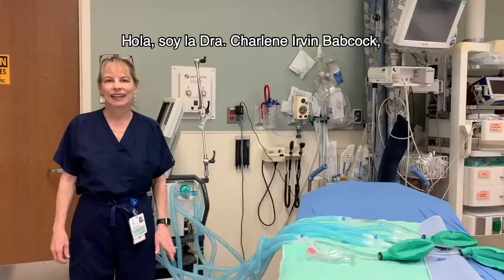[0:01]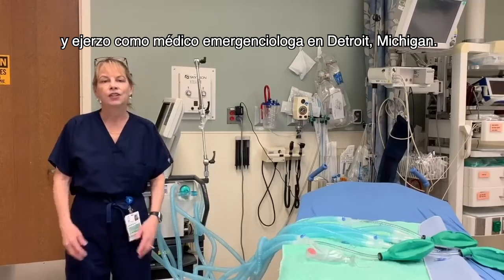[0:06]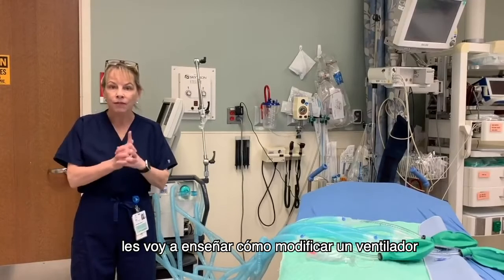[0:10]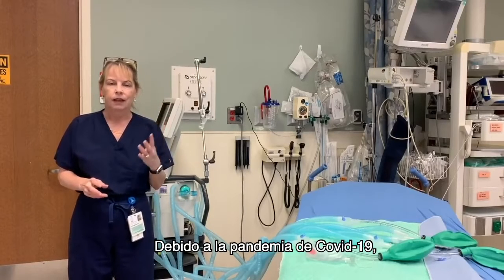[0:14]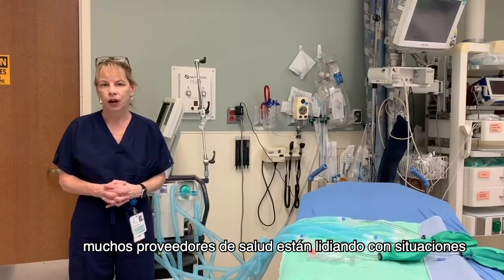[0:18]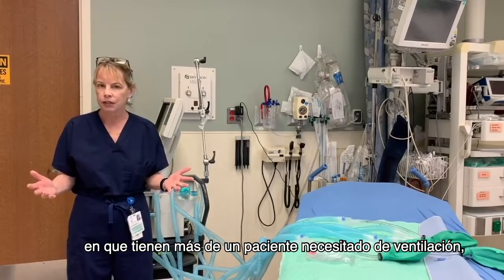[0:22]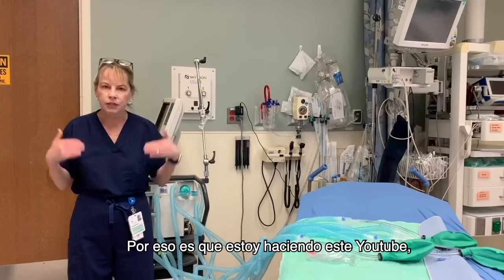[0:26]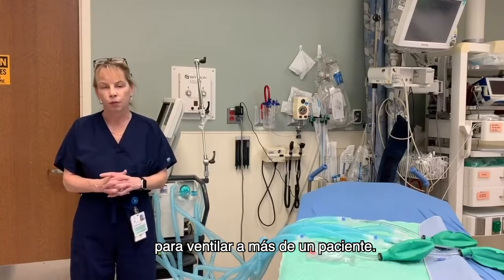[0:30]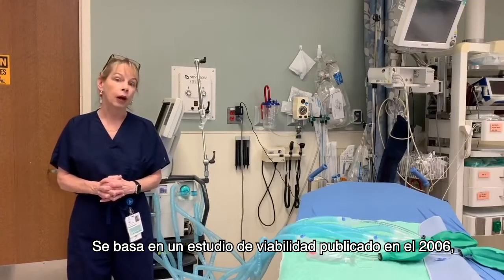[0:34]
And on this YouTube, I'd like to show you how to modify one ventilator to ventilate 2 or 4 patients simultaneously. Because of the COVID-19 pandemic, many healthcare providers are struggling with a situation where they may have more than one patient needing ventilation and not enough ventilators to go around. So that's why I'm putting this YouTube together, so I can show you how to modify one ventilator to ventilate more than one patient.
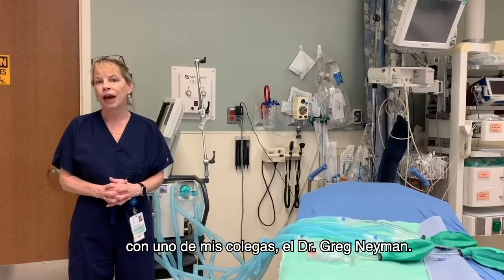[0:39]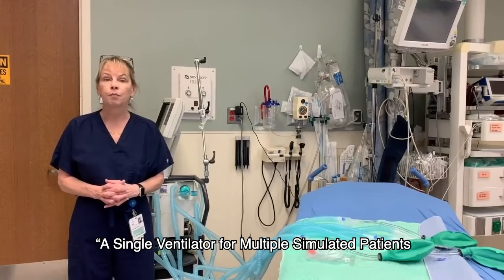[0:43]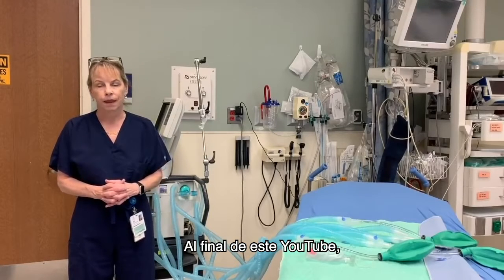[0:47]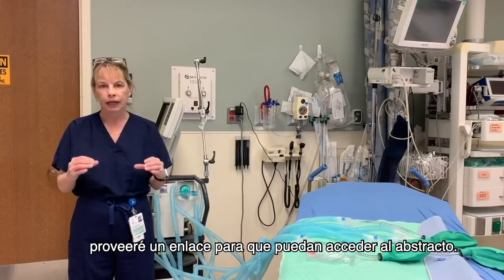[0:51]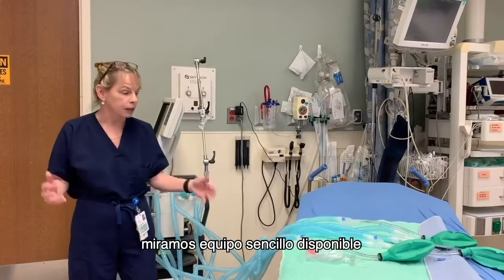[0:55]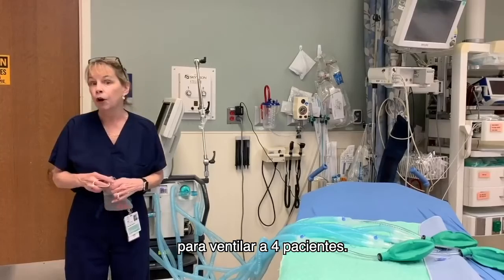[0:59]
It's based on a feasibility study that was published in 2006 in Academic Emergency Medicine with one of my colleagues, Dr. Greg Neyman. The name of that manuscript is A Single Ventilator for Multiple Simulated Patients to Meet Disaster Surge. And at the end of this YouTube, I'll provide a link so you can click on it and go to the abstract. In that study, we just looked at simple equipment available in the emergency department and a way to modify the ventilator to ventilate 4 patients.
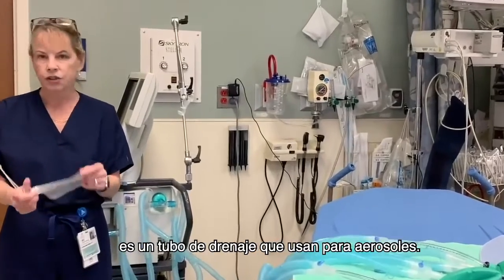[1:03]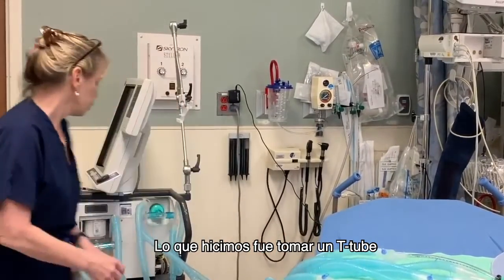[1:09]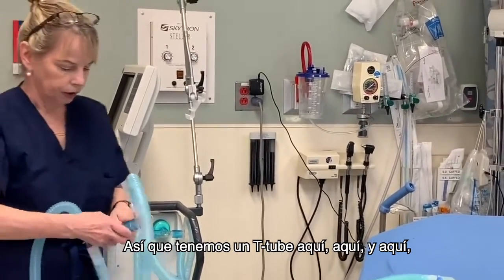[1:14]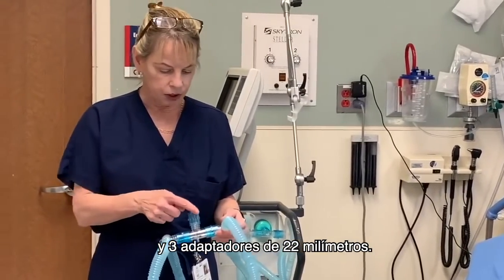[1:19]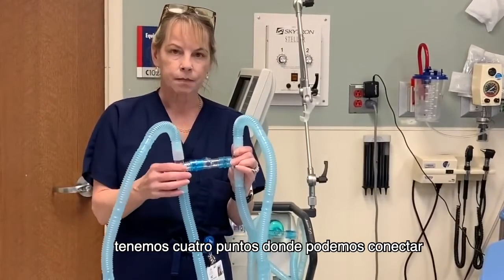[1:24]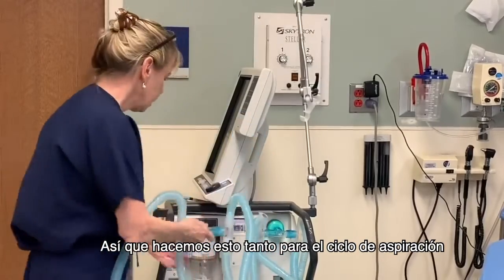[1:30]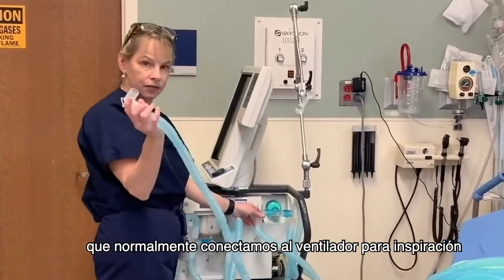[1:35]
And we used a T-tube, this is from a respiratory therapist cart. It's a drainage tube they use for aerosols. And we cut the bag off so we have a T-tube. And what we did is we took one T-tube and 4 different adapters. These are 22 millimeter adapters. So here you have a T-tube here, here, and here, and 3 22 millimeter adapters. And in this configuration, we have 4 ports that we can connect the expiration to or the inspiration cycle to. So we did this on both the expiration cycle and the inspiration cycle and connected the tube that we normally connect to the ventilator for inspiration directly to these tubes.
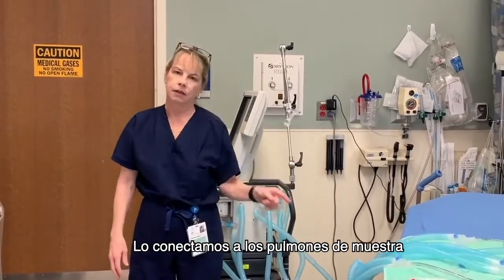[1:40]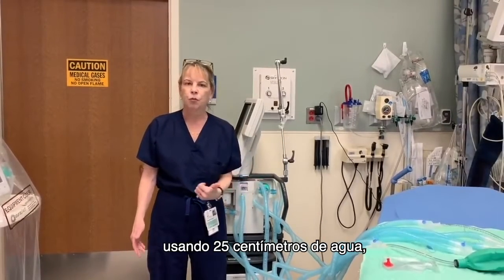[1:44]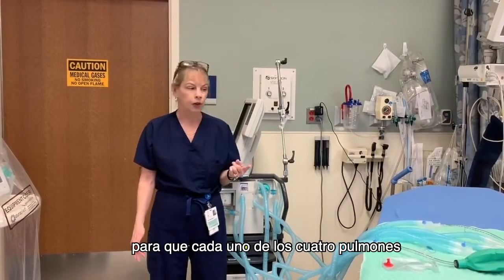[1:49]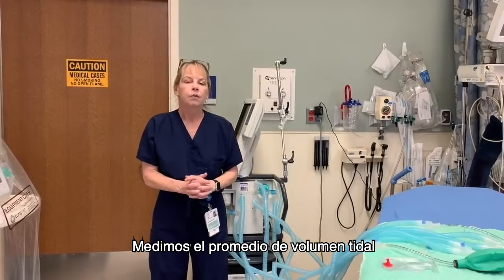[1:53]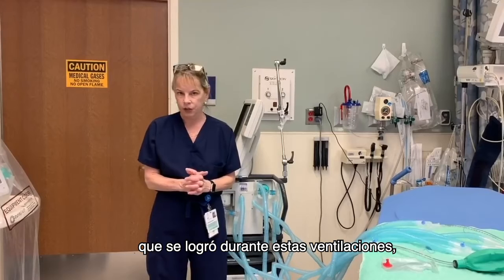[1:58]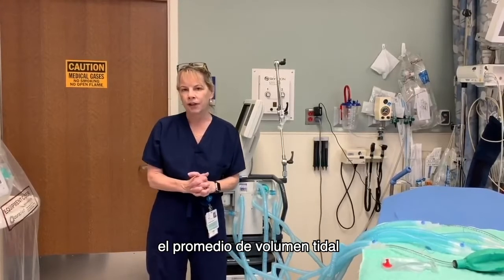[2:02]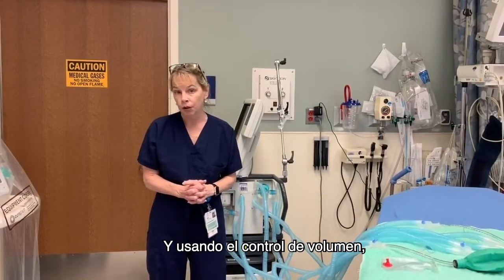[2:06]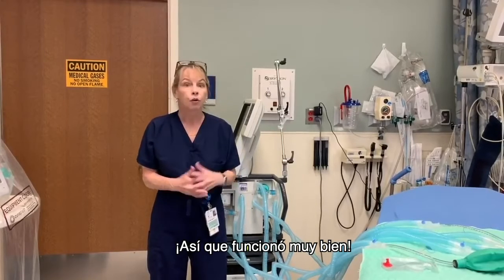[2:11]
We hooked them up to test lungs and we watched them for 6 hours. 6 hours both on pressure control using 25 centimeters of water and volume control using 2 liters tidal volume, so that each test lung, 4 test lungs, each one would get about 500 mLs. We measured the average tidal volume that was achieved during these ventilations, and using pressure control at 25 centimeters of water, the average tidal volume was approximately 471 cc's, and using volume control, the average tidal volume per test lung was approximately 510 mLs. So it worked very well.
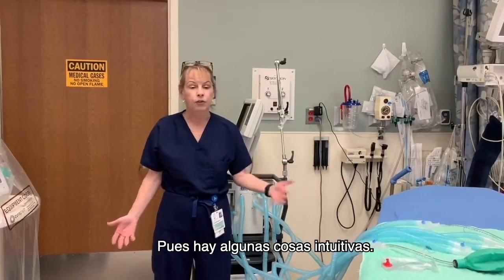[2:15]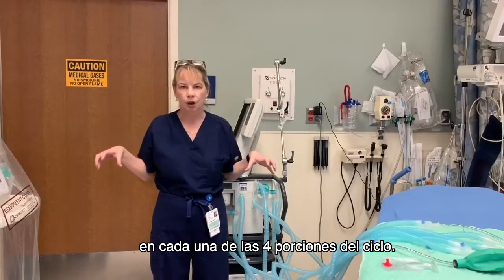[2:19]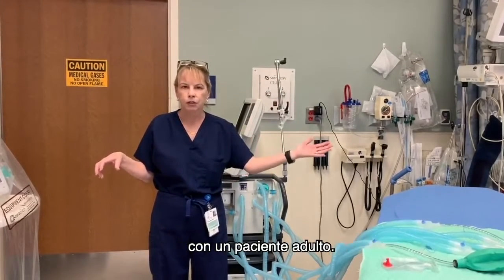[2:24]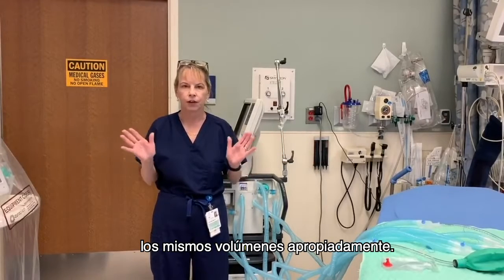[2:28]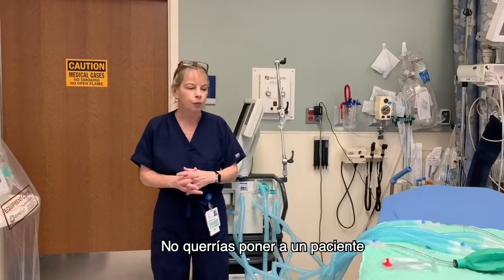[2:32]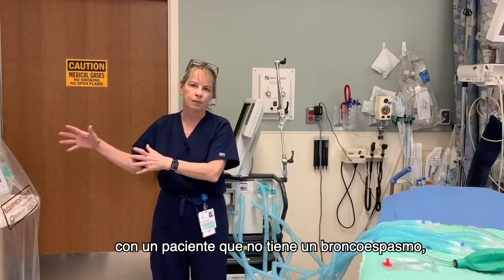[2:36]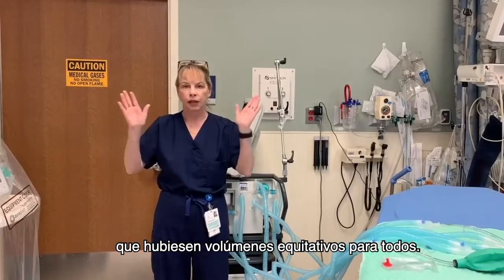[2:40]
But how do you use this information, because it's only been done on a test lung? Well, there's a few things that are somewhat intuitive. First of all, you want to make sure the lung sizes are the same in all 4 portions of the circuit. You wouldn't want to put a pediatric patient with an adult patient, because that wouldn't make sense. It wouldn't be able to ensure that the same volume is delivered everywhere appropriately. Likewise, you want to make sure the resistance is the same. You wouldn't want to put a patient with severe bronchospasm with a patient who did not have bronchospasm, because that might change the amount of volumes and it wouldn't make sure that they were equal volumes delivered to everybody.
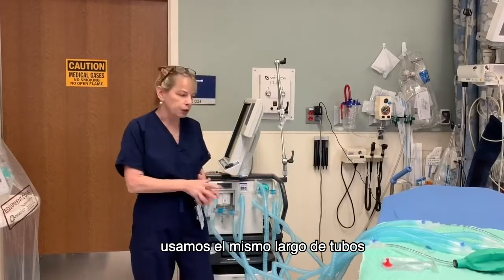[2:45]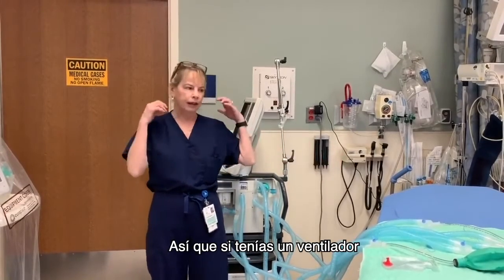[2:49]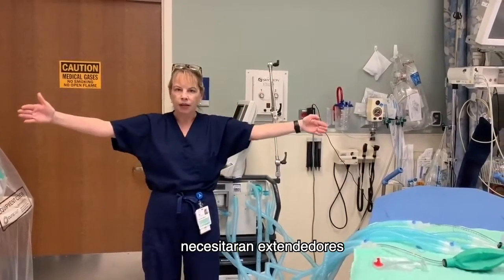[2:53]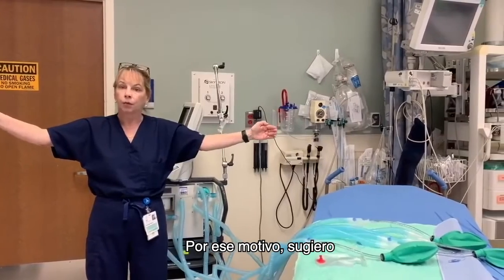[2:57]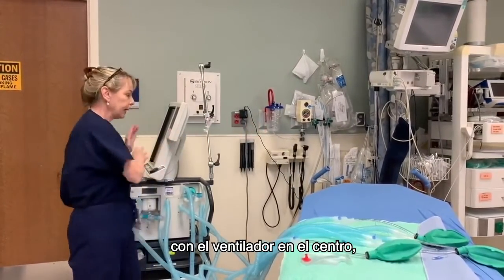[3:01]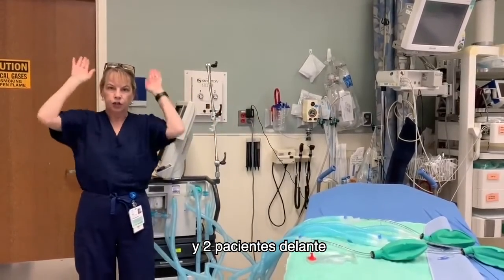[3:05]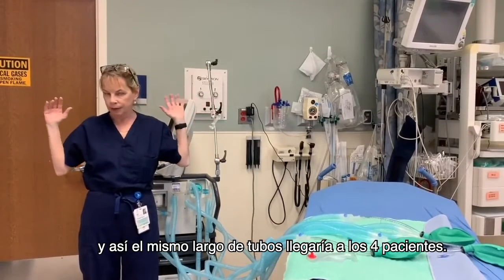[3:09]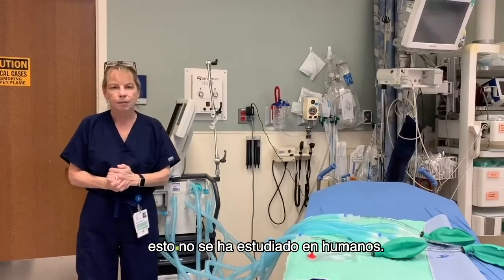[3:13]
Additionally, in the study, we use the same length tubing for all 4 test lungs. So if you had one ventilator with 4 patients in a row such as that, the patients on the outside might need extenders to have the tubes reach the ventilator. For that reason, I would suggest what I call a half-star configuration. So the ventilator in the middle, 2 patients on either side with the heads facing the ventilator, and 2 patients in front with the heads facing the ventilator. And that way, the same length tubing would be able to reach all 4 patients. Now, having said this, again, this has not been studied in humans.
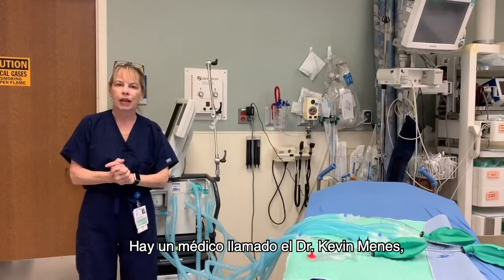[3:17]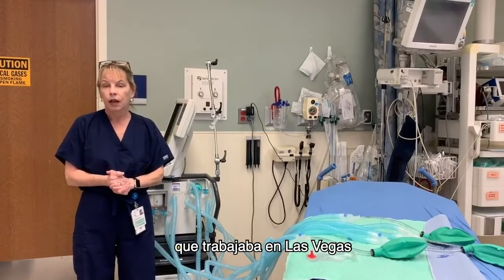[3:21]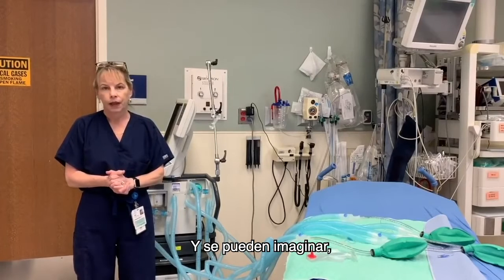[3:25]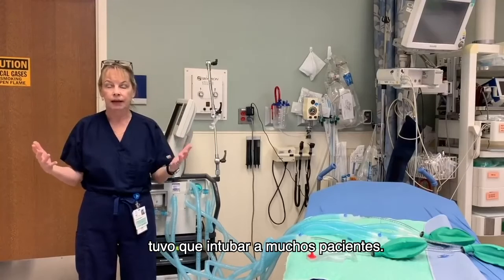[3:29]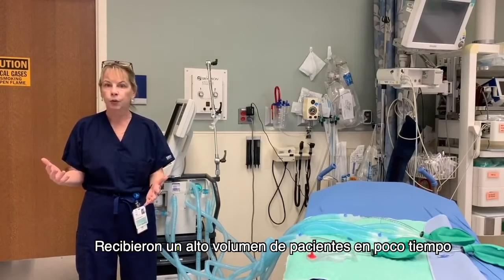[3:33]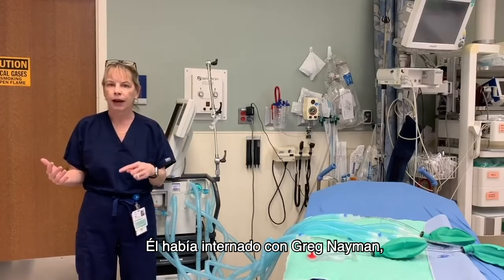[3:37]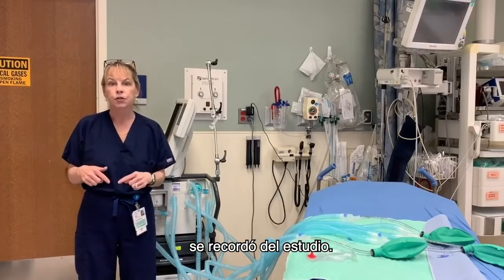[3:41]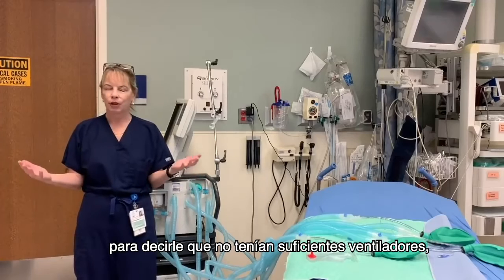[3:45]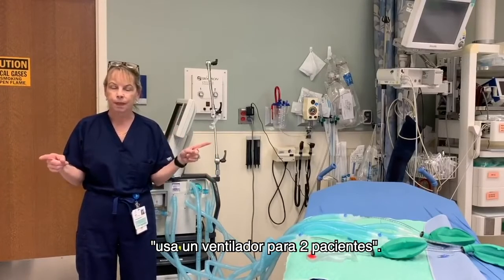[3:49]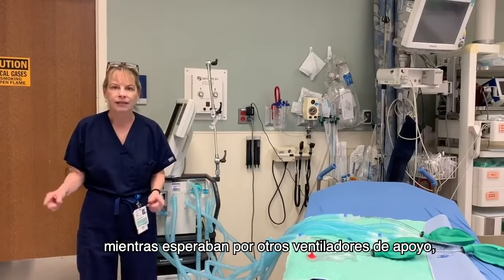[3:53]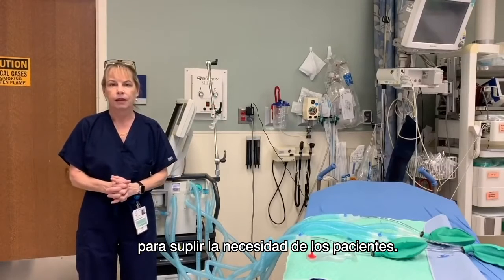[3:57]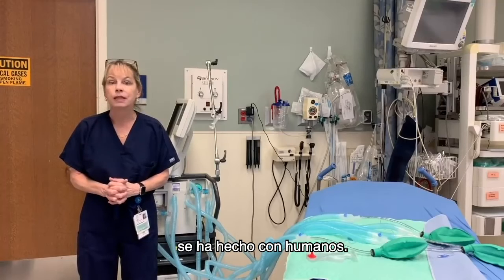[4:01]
I will tell you it has been done in humans. There's a physician by the name of Dr. Kevin Menes. He is a practicing emergency medicine physician, and he was practicing in Las Vegas during the Las Vegas shooting disaster. And you can imagine, with a lot of penetrating torso and CNS injuries, he intubated a lot of patients. Well, they received a large volume of patients very quickly, and they ran out of ventilators. He actually trained in residency with Greg Namus, who was my co-author on this study, in residency at this institution, and he remembered this study. So when the respiratory therapist came up to him and said, "We don't have enough ventilators," he said, "Okay, get a splitter, use 1 ventilator for 2 patients." And it was very successful. He was able to keep them alive for hours as they waited for outside ventilator support to come in and help them supply the patient need. So although it hasn't been studied in humans, it has been done in humans.
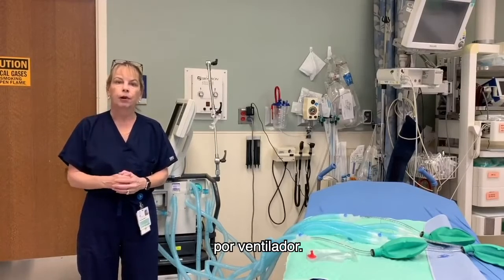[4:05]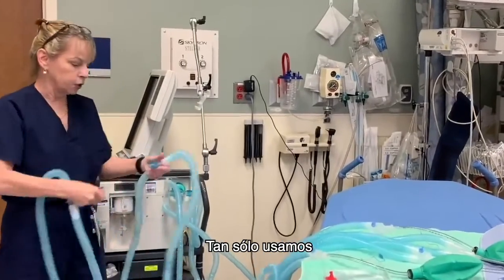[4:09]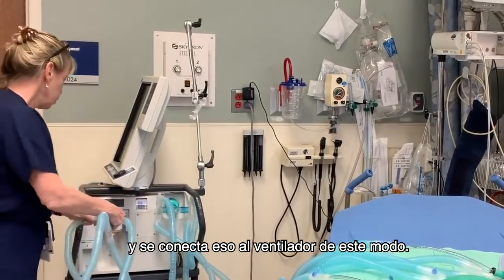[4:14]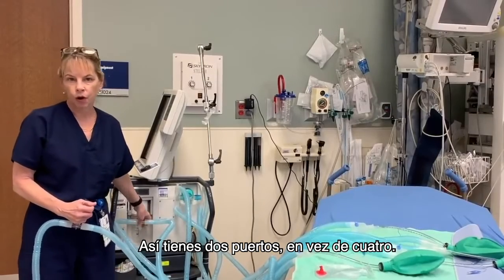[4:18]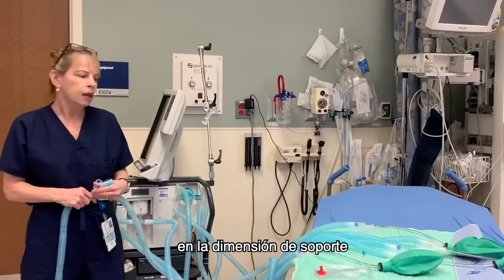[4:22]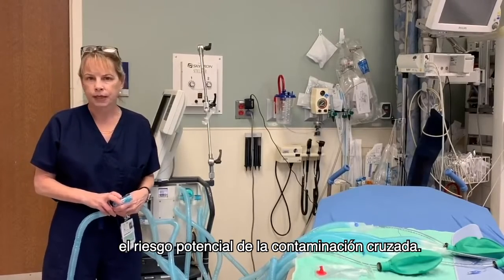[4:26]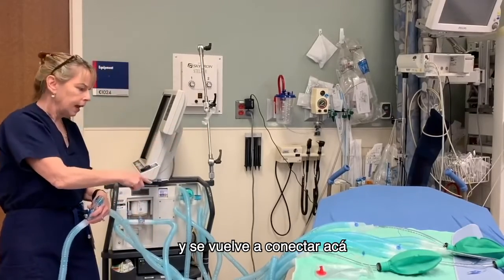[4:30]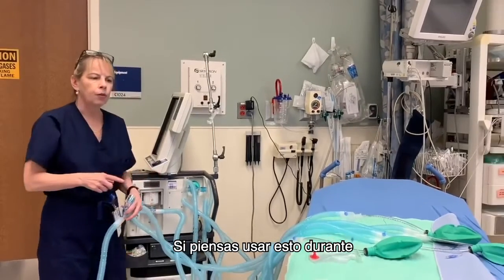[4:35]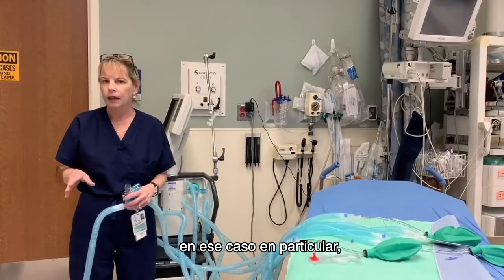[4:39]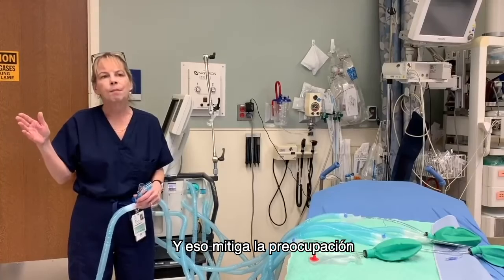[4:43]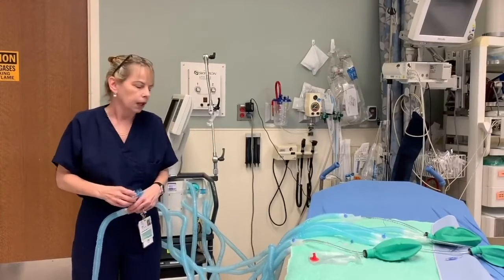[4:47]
Now in that particular case, he used 2 patients per ventilator. And that setup is not that difficult to change. You simply use 1 T-splitter with 1 adapter and hook that up to the ventilator such as this. And that way you have 2 ports as opposed to 4. Now there is something that has not been studied that's important to mention, is that we did not evaluate the potential cross-contamination risk. This is a one-way circuit. So you imagine that the air is going one way and it connects back here, so the risk is low, but we don't know that for sure. Now, if you envision using this during the COVID-19 pandemic, in that particular case, they all had the same infection. So that somewhat mitigates the concern about a cross-contamination risk, because they all have the same infection.
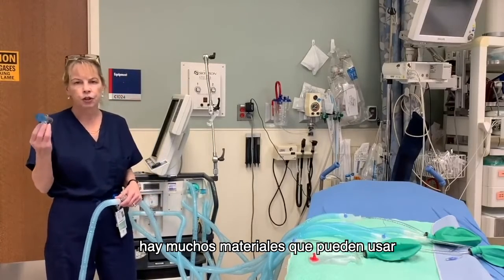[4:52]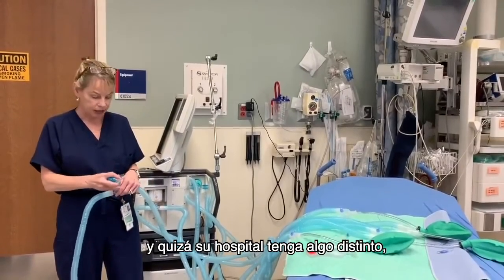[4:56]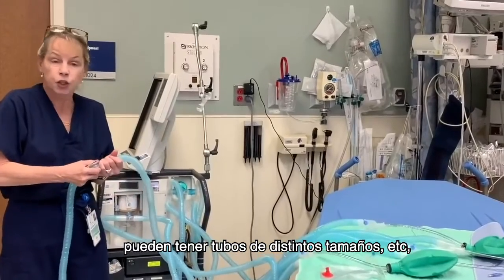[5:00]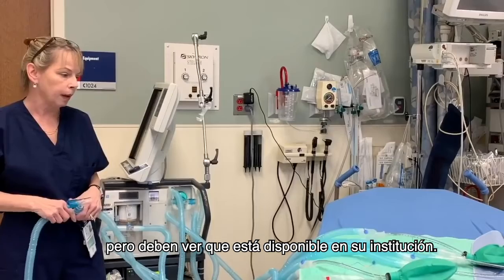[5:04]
I will tell you that there's lots of different materials that you can use to configure it, such as a T-system like this, and your hospital may have something different, but if you simply put it together as the way I showed you, you may have different size tubes, etc., but using that type of H formation will help, but you have to see what you have in your institution.
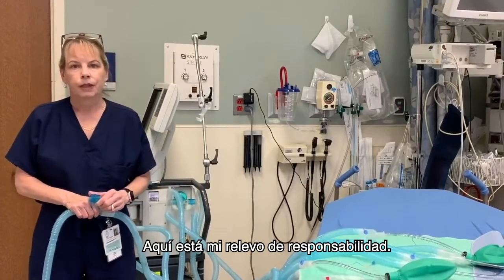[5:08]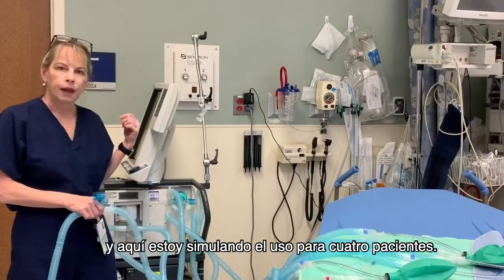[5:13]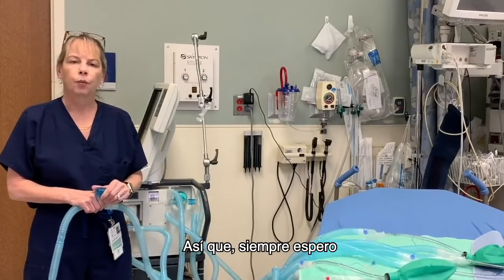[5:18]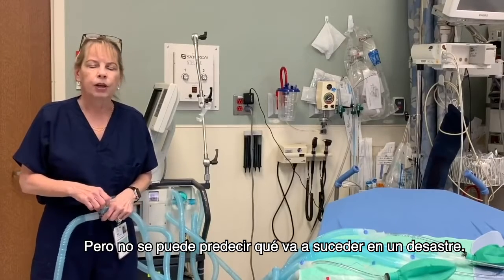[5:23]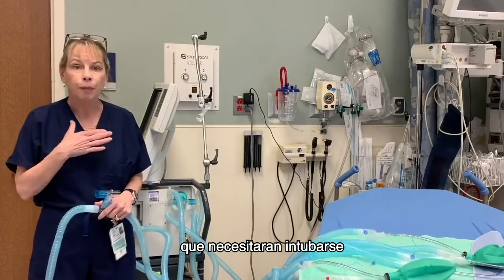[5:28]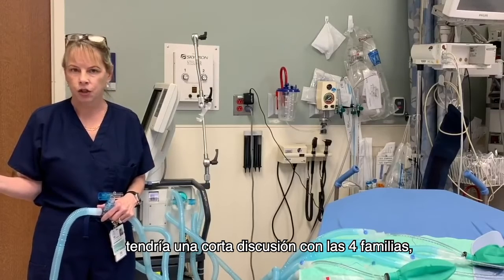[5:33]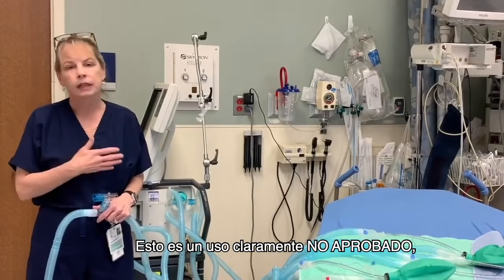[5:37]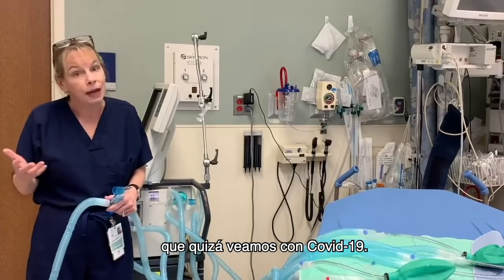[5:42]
Now here's my disclaimer. This is off-label use of the ventilator. The ventilator is made for one person, and I'm using it here in a simulation of 4 patients. And so I always hope that you would never need to use it in this way, but you can never predict what's going to happen in a disaster. And if it was me and I had 4 patients and they all needed intubation and I only had 1 ventilator, I would simply have a shared discussion meeting with all 4 families and say, I could pick one to live, or we can try to have all 4 live. But this is clearly off-label and likely would only be used in a dire circumstance, which we may see with COVID-19.